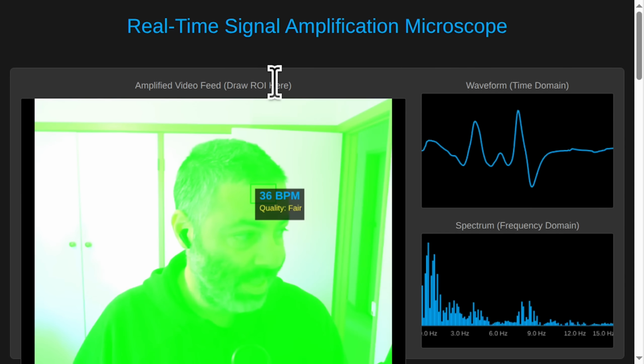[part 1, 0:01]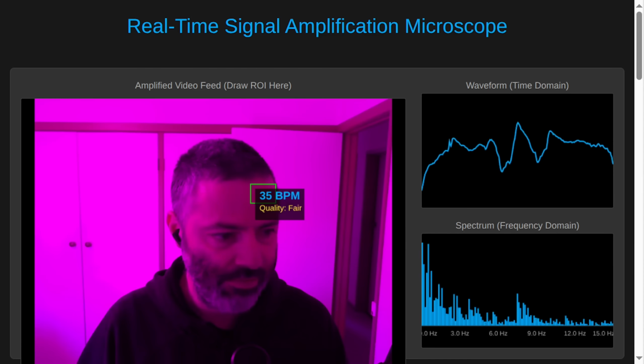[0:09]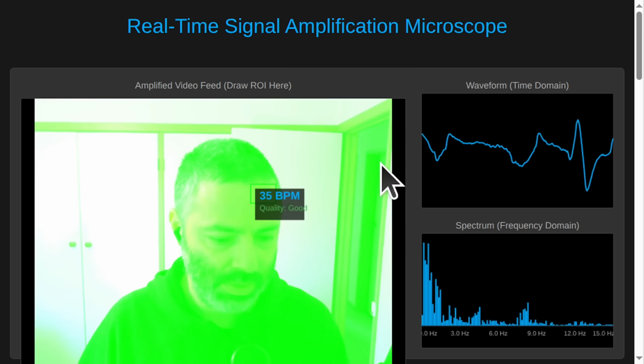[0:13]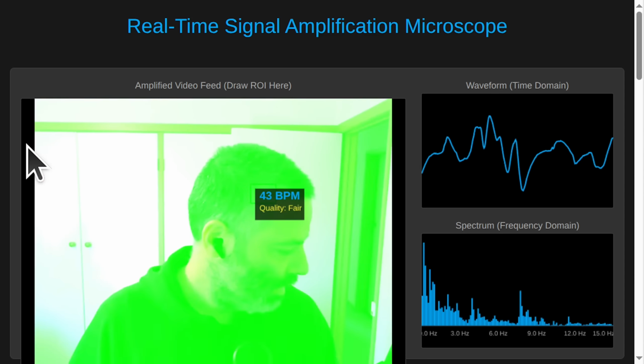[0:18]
So we're doing real-time signal amplification using a camera. Yeah, I think we made a rookie mistake. We made the very basic mistake where what's actually being measured is that flashing light on the screen. And we can test it easily by covering that.
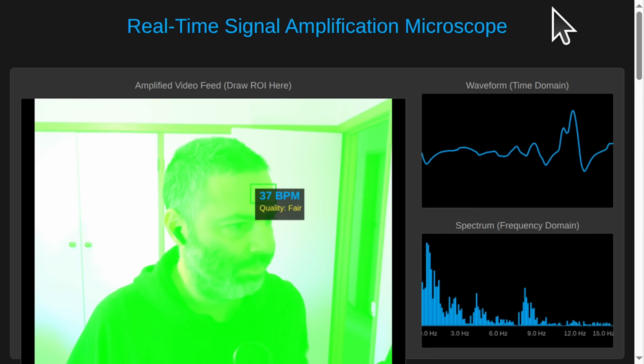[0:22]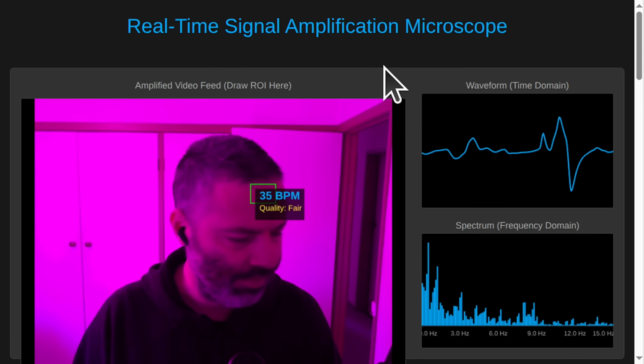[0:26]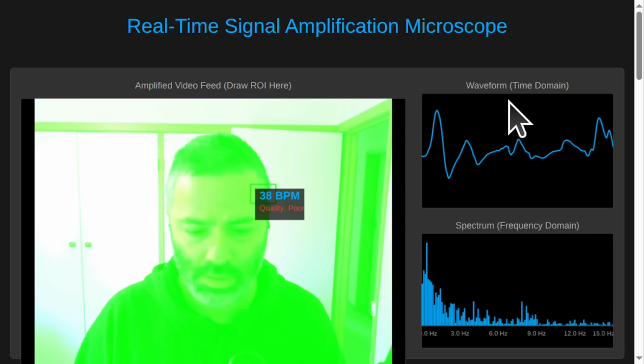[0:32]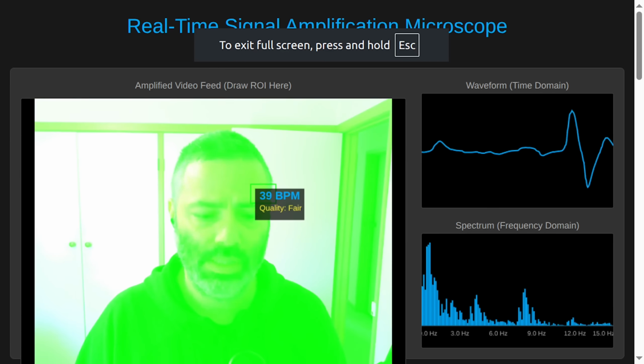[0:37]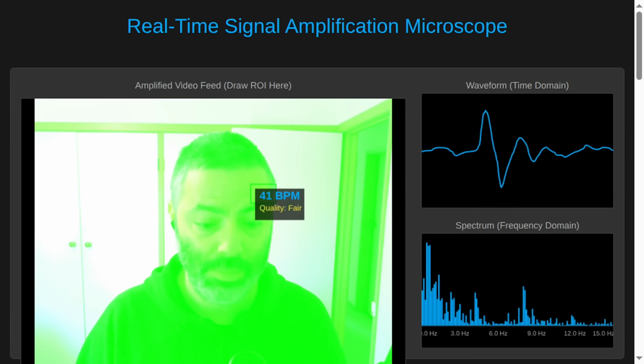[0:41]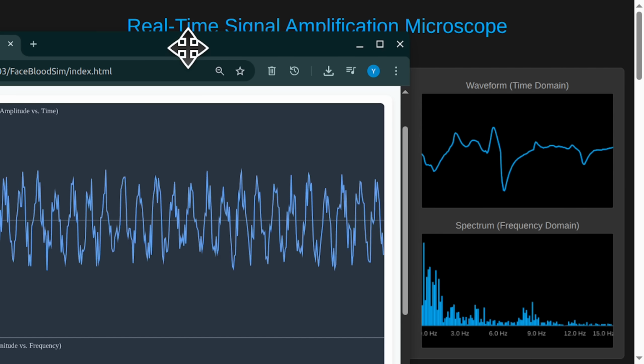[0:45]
I still want to see anything big enough to cover the thing, but essentially what's happening is that it's the light. I don't want to remove the screen, so essentially what's being measured is what's showing that 35 BPM is not real. So I will cover it by that and see the change.
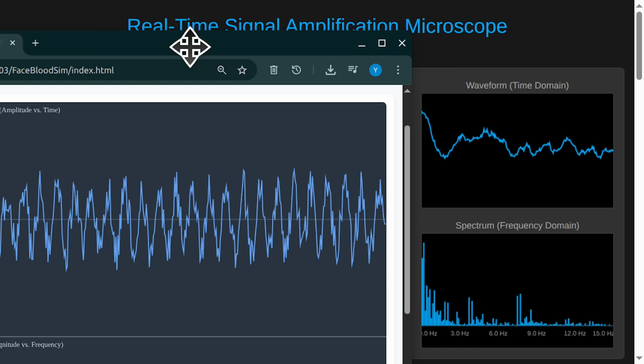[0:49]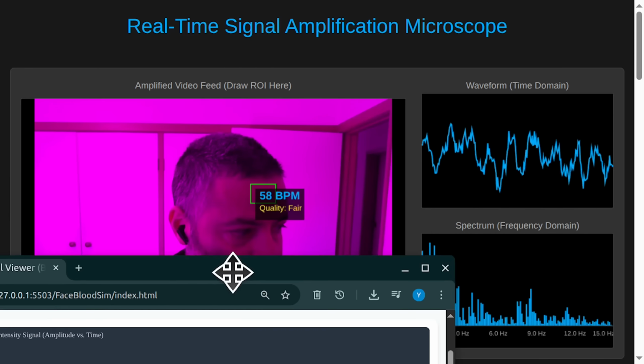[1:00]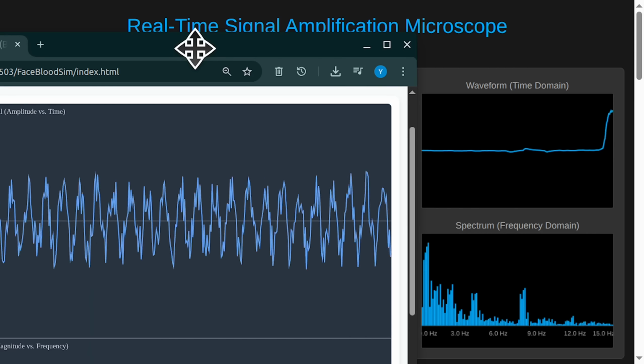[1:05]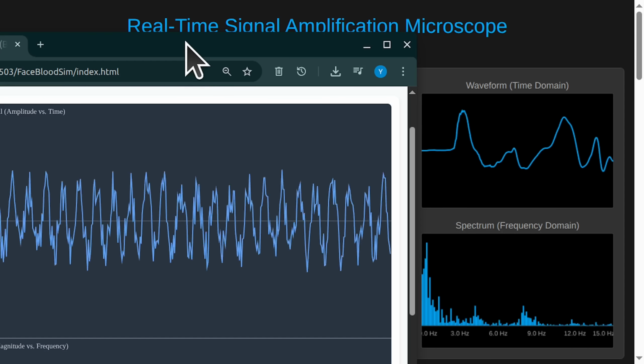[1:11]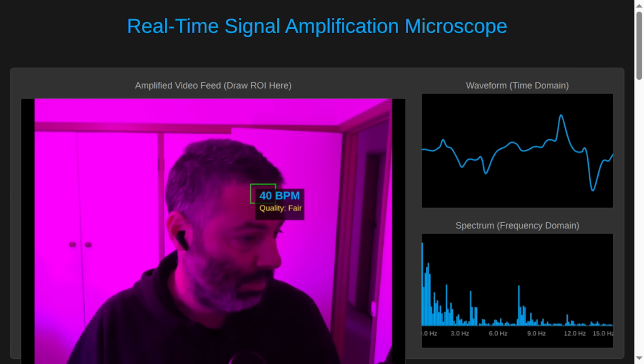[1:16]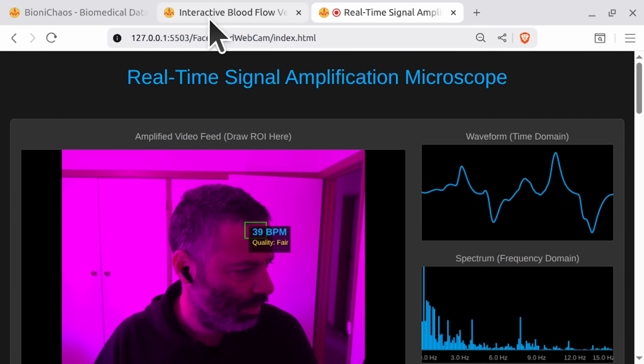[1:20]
So now it's not flashing light on my face. Okay, now it's doing the real ECG. Yeah, and the frequency has changed. Yeah, 62 is more like it. So it's the light reflecting off the screen. That's what happens when you monitor the system. Yeah, okay. We will need to change that.
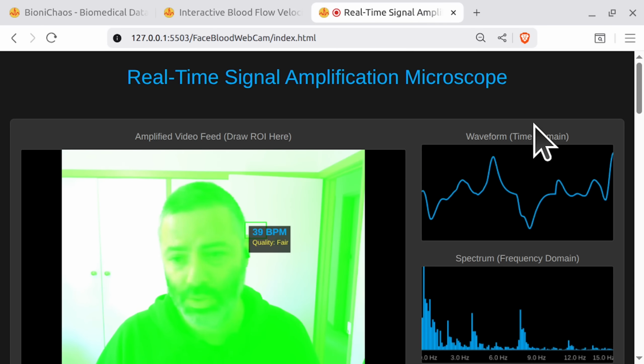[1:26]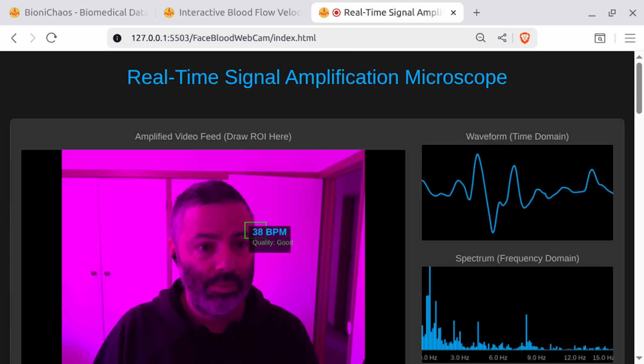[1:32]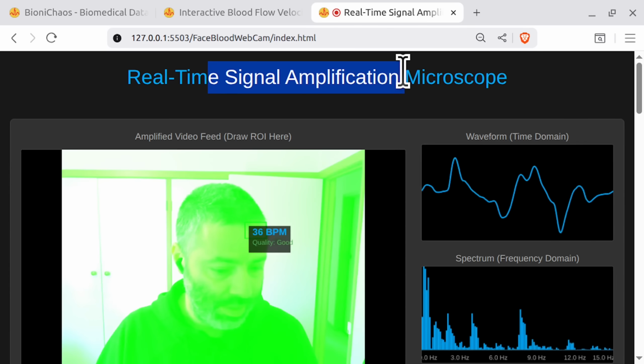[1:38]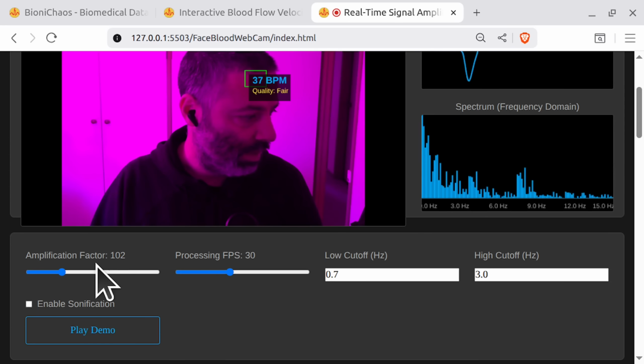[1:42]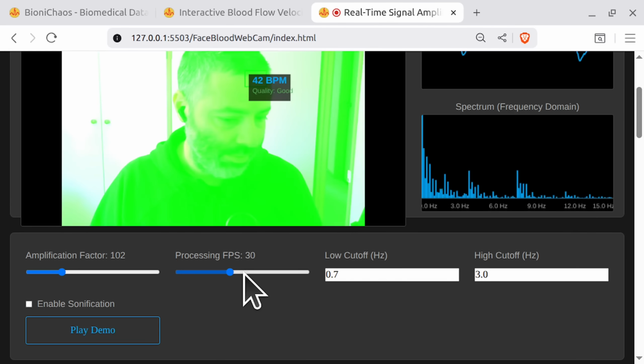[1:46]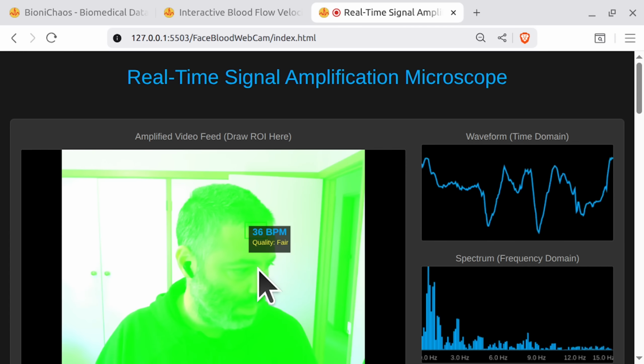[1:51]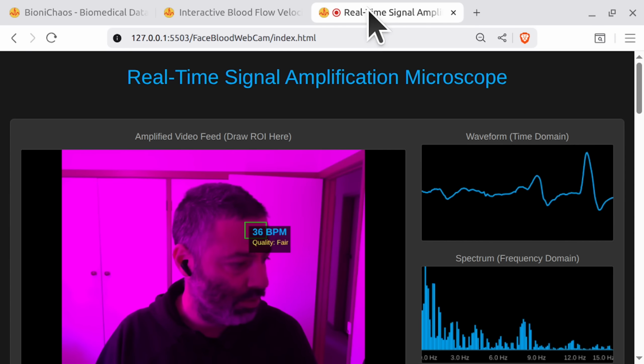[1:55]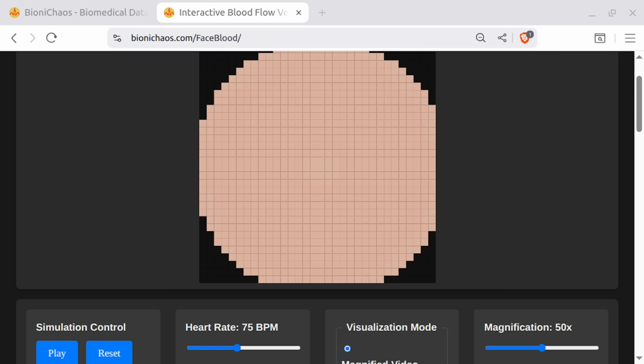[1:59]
Okay, so what we currently have, this one's published. I published the other stuff. So there will be essentially two versions with synthetic data. And then there will be one that can actually activate your camera and do real-time processing on your camera. Amplify the signal, process at whatever frames per second. You can set your filters and it will extract the beats per minute, which is your heart rate. But first we'll do it step by step, and we'll have an LLM explaining it properly as well.
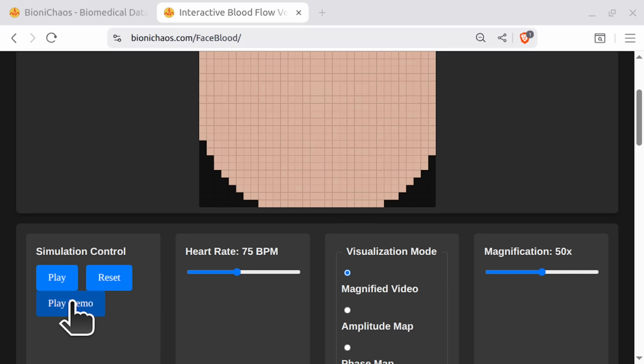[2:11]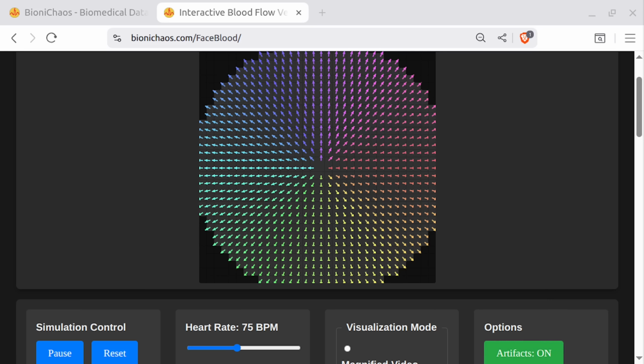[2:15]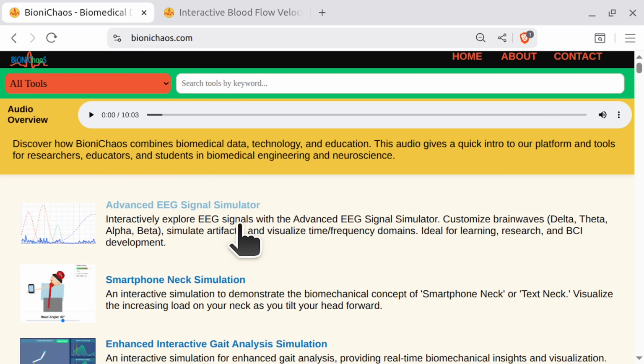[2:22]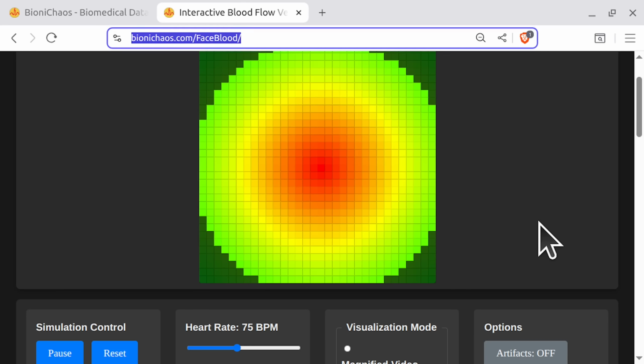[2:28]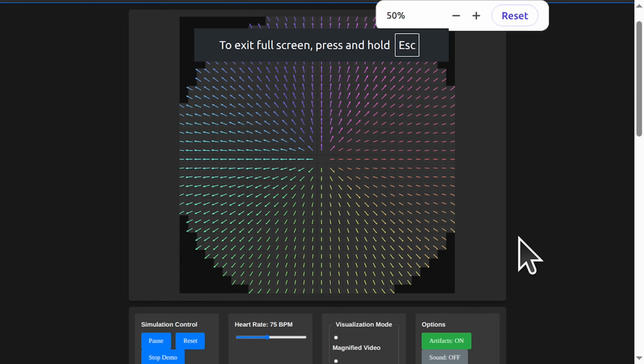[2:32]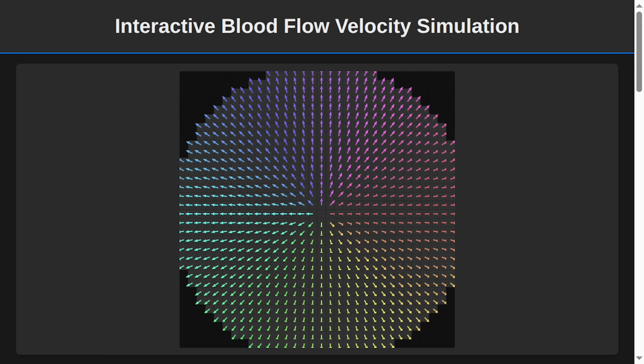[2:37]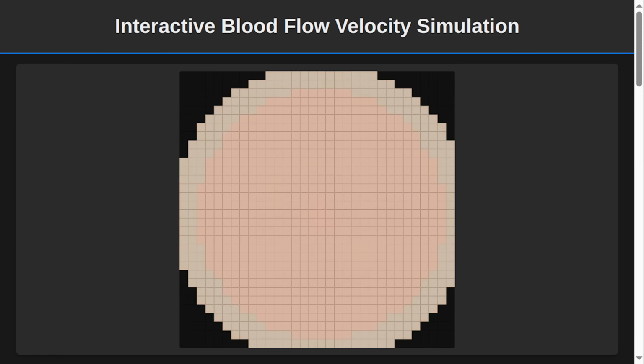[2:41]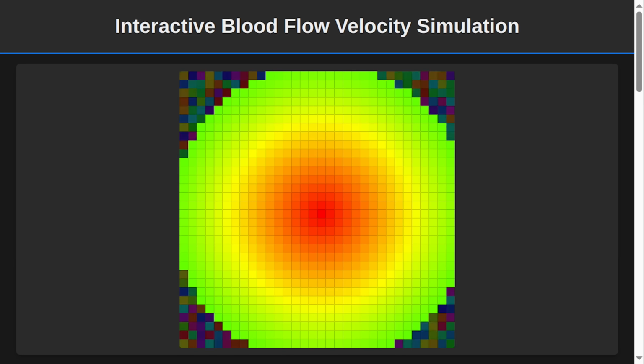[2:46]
So cover this one quickly. Okay, we essentially gave this page to Google AI Studio Gemini 2.5 Pro, and just listen to a 5 minute review. So what do you think?
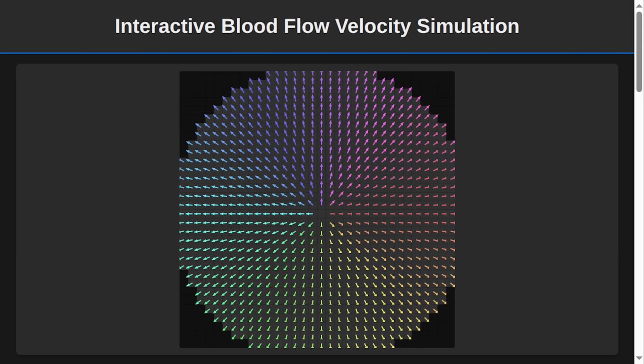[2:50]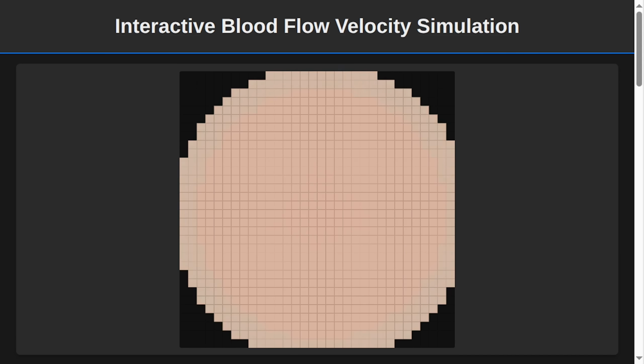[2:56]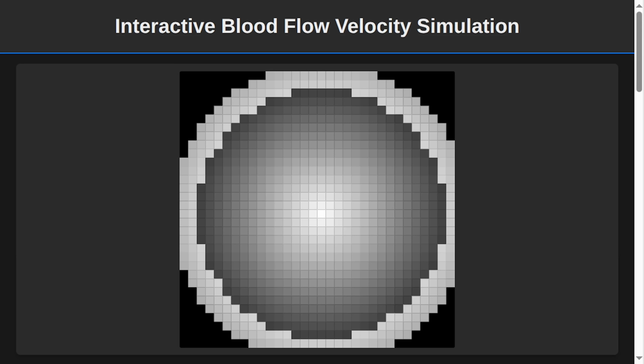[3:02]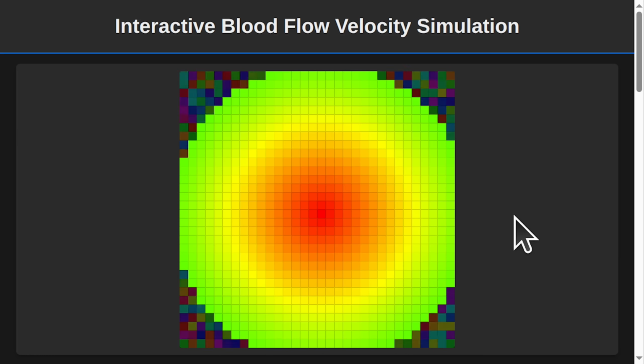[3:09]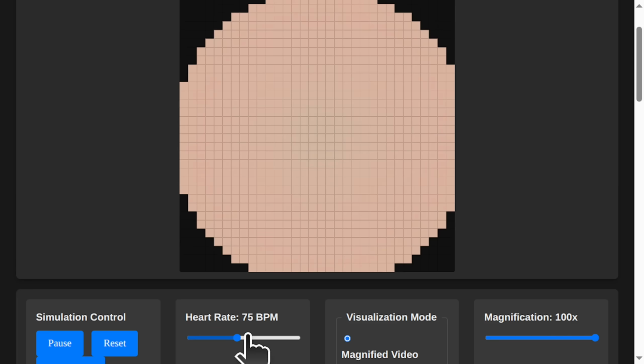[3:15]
Pretty cool, right? It's a beige square that blushes on command. I've seen more excitement on a piece of toast. What am I looking at? The world's most anxious screensaver? Not quite. You're looking at a simulation of your skin. That blushing is its heartbeat. We're amplifying the microscopic color changes that happen every time blood pulses through the capillaries just under the surface. You've built a digital vampire that can see blood.
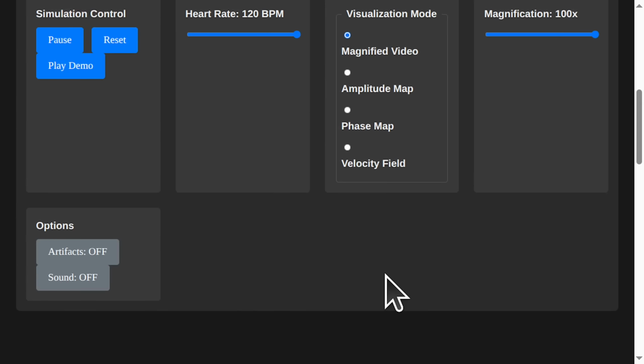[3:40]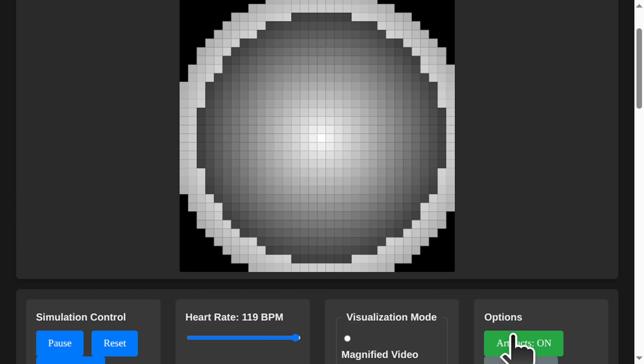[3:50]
Okay, I'm listening. So this magnified video mode is just turning up the volume on the skin's color. Exactly. It's based on a technique called Eulerian Video Magnification. We're not inventing the signal, just making the invisible visible. Now click on Amplitude map. Whoa, monochrome. It looks like a sonogram of a ghost. The bright parts are, what, the good parts? The bright parts are where the pulse signal is strongest. Think of it as a map showing where the major blood highways are. Darker areas have less flow near the surface. So it's a stud finder for veins.
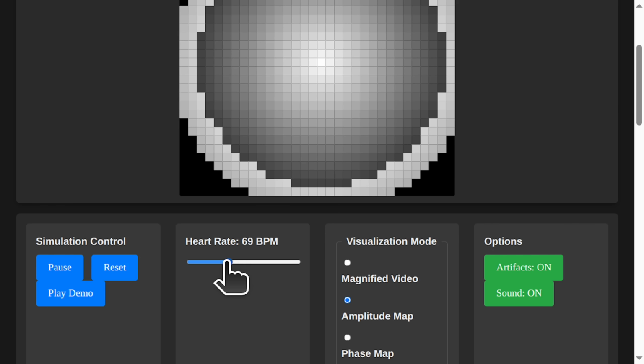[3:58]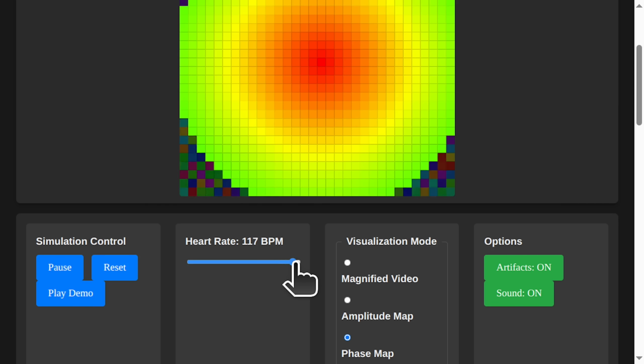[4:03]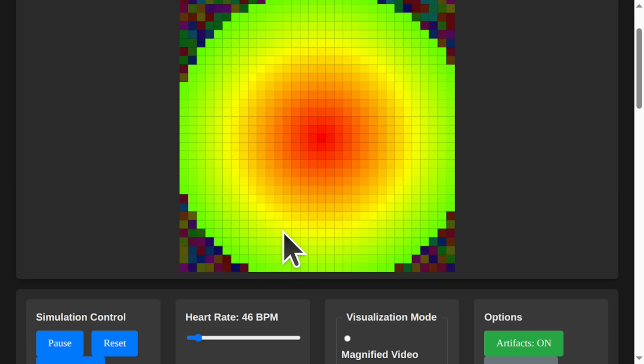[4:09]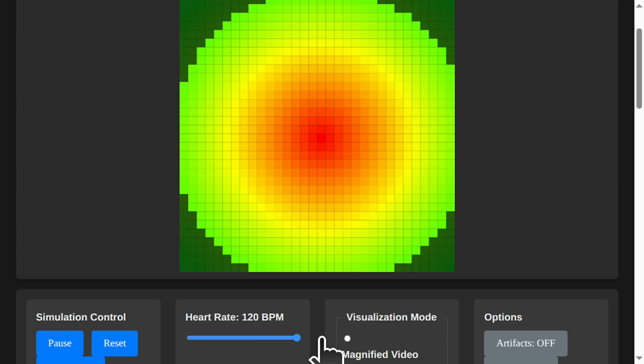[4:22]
Got it. What about this phase map? It looks like a psychedelic tie-dye experiment gone beautifully right. This is the clever bit. The phase map visualizes the timing of the pulse. See how the colors change from the center outwards? That's the pulse wave traveling across the patch of skin. Every color represents a different moment in the heartbeat cycle. Ah, I get it. It's like the wave at a baseball game. The people in the middle start and it ripples outwards. You're tracking the blood wave. So the blue guys are just starting to stand up and the red guys are already sitting down. That is a perfect analogy.
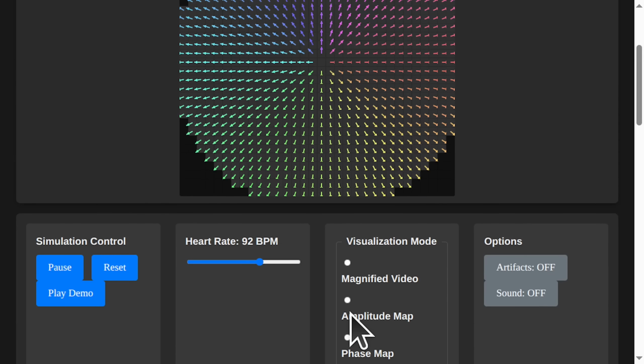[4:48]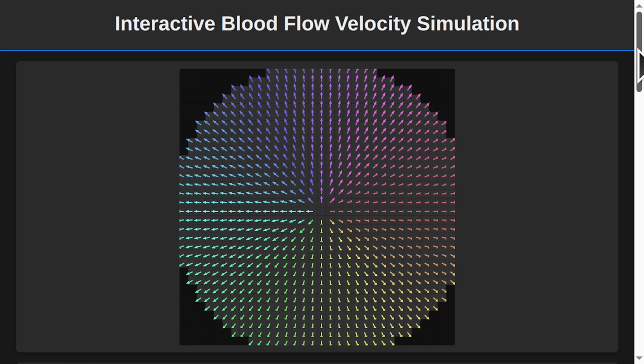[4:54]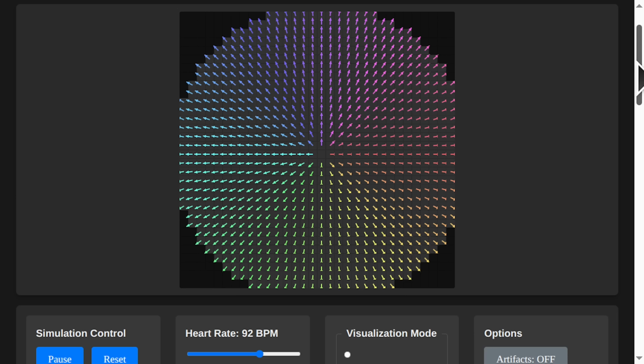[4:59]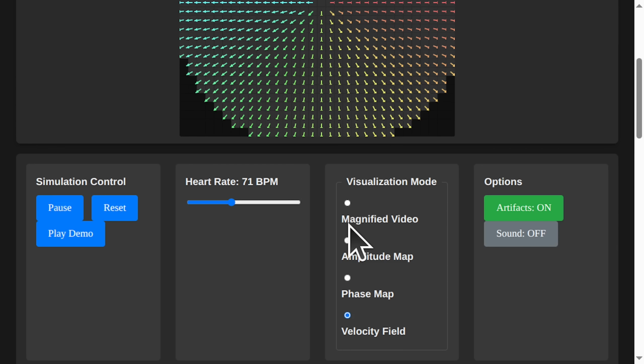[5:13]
And because we know the timing difference, the phase shift between all these adjacent points, we can calculate the final step. Click velocity field. Arrows. It's waves for my arteries. It's literally showing the direction the blood is going. Yup. By calculating the gradient of the phase map, basically looking at how fast the wave is moving between two points and in what direction, we can generate a 2D vector field of the blood flow. So you went from a beige square to a ghost map to a Grateful Dead t-shirt and landed on a traffic report for my circulatory system. That's a heck of a journey.
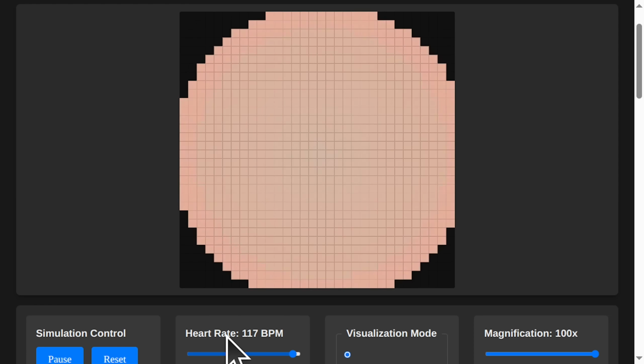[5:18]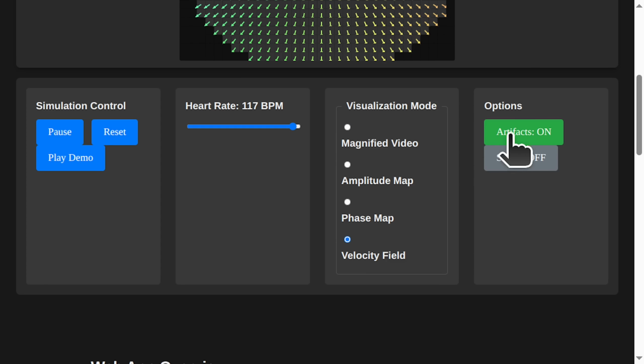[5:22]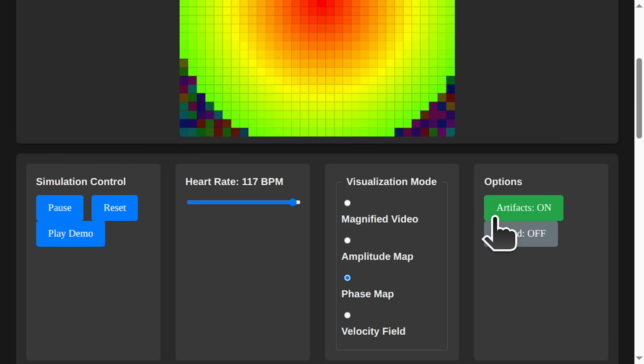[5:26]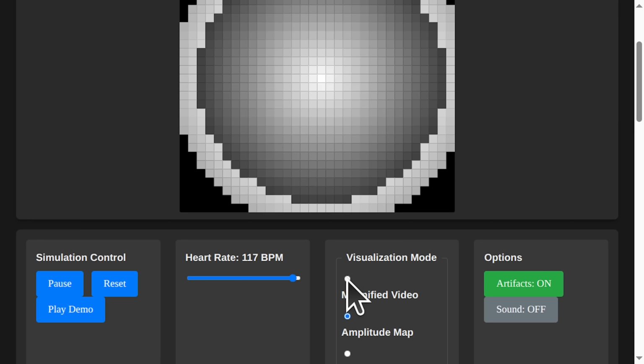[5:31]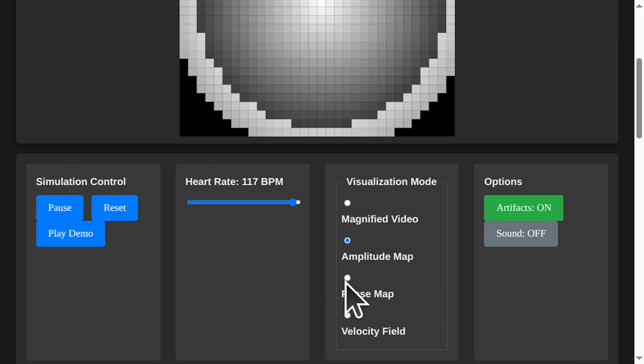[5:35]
What's this artifacts button do? Make it look like a blurry UFO video? Pretty much. Real-world video is noisy. You get motion, weird lighting, compression. This simulates that. See the halo effect on the amplitude map? And look how the phase map gets all noisy and chaotic.
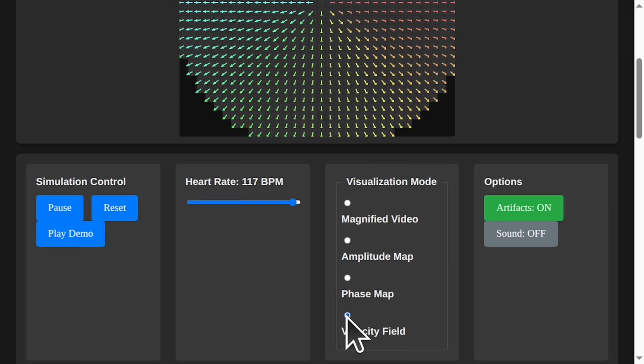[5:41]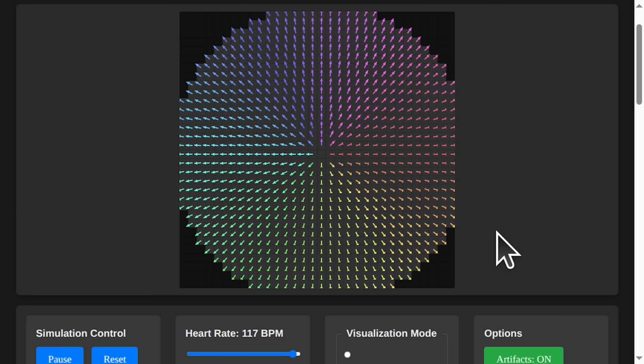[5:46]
It looks like my tie-dye shirt went through the blender. But wait, the velocity arrow is still mostly okay, a bit twitchy, but they know where they're going. Because the code is smart. The velocity calculation includes a step to filter out the noise.
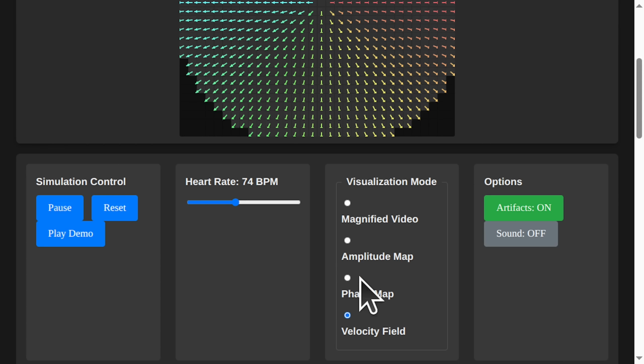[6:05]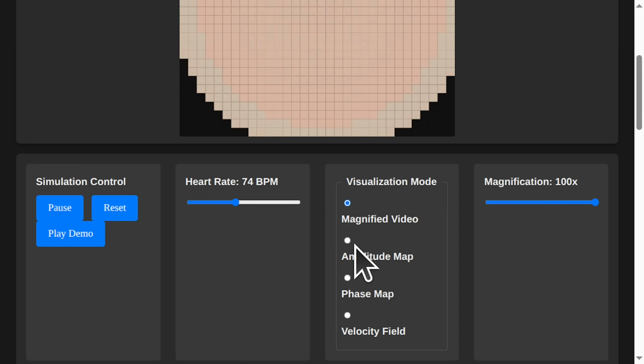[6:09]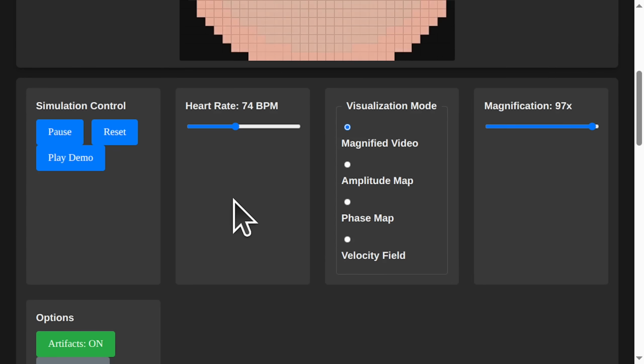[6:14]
It looks at the phase variance in a local neighborhood. If an area is too chaotic, like that staticky mess on the edges, it assumes it's an artifact and ignores it. A nosy neighbor algorithm. Hey, is everyone else on this block pulsing in a nice, orderly wave? Yes? Okay, then you, Mr. Disco Strobe Light Pixel, you're clearly drunk. We're ignoring you. That's a surprisingly accurate summary of local spatial filtering, yes.
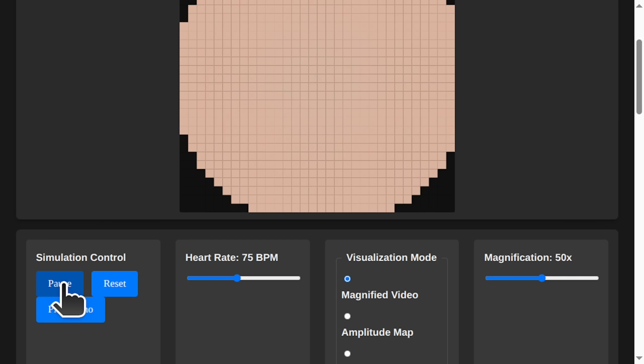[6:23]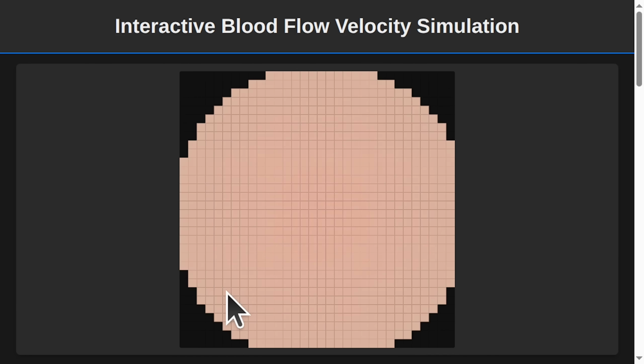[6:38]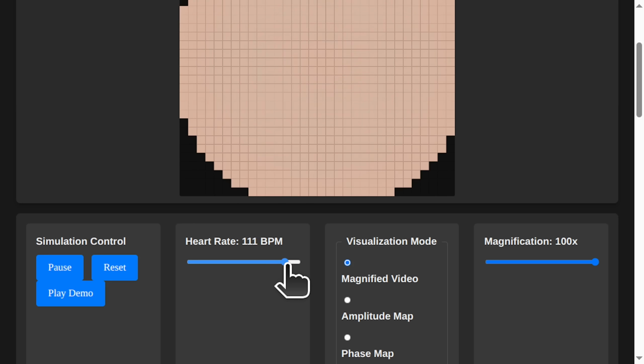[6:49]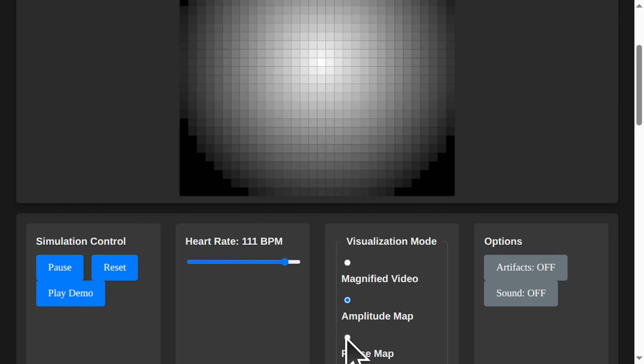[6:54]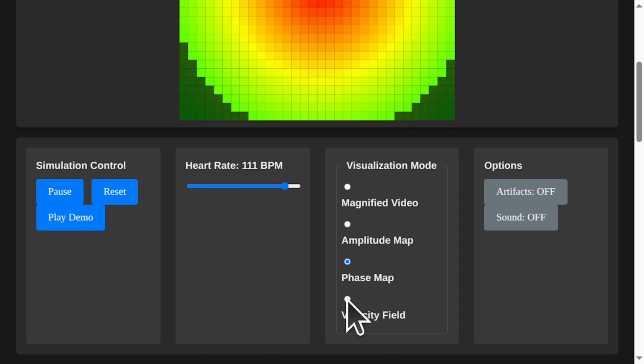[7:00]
It's all running in the browser with JavaScript. The generate synthetic data function creates this perfect little blood wave model, and request animation keeps the pulse smooth. So this isn't just a fun toy. What's the endgame? A lie detector app that checks if your date's heart is actually racing? The endgame is telehealth. Imagine a doctor being able to assess a patient's cardiovascular health just from a video call, or monitoring premature babies in an incubator without sticking wires to their delicate skin. It's about turning any camera into a powerful medical sensor.
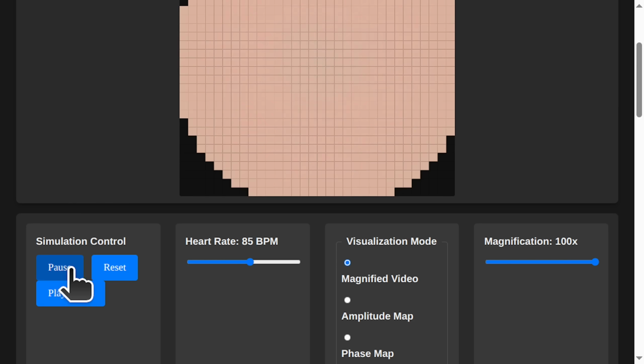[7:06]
Wow, okay, that's genuinely amazing. You're turning a selfie into a medical checkup. And here I was just thinking it'd be a great way to prove to my trainer that I am in fact dying on the treadmill. Well, it could do that too.
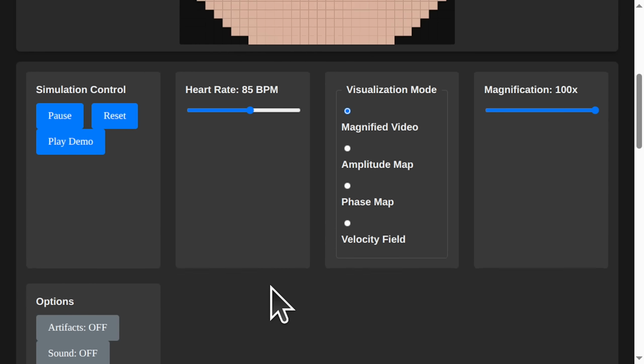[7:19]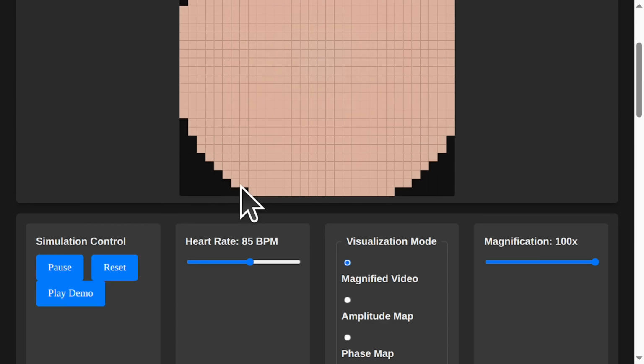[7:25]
Want to try turning on the sound? You made it make noise? Please tell me it's not a tiny synthesized screaming sound. It's a heartbeat. Okay, that's much better. So basically, you've built a beautiful, interactive, data-driven Tamagotchi of a human artery. I love it. Don't tell it I called it beige. I think I hurt its feelings.
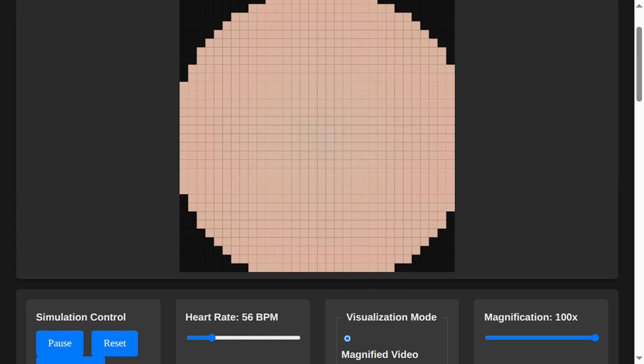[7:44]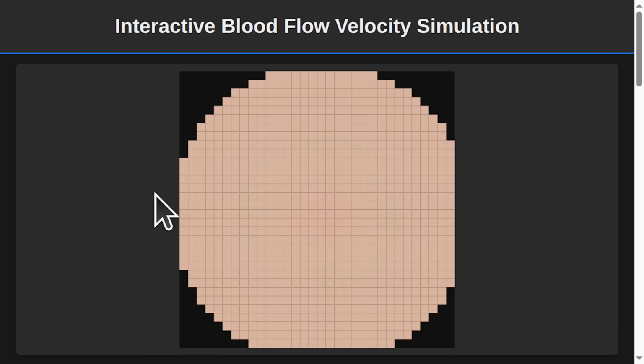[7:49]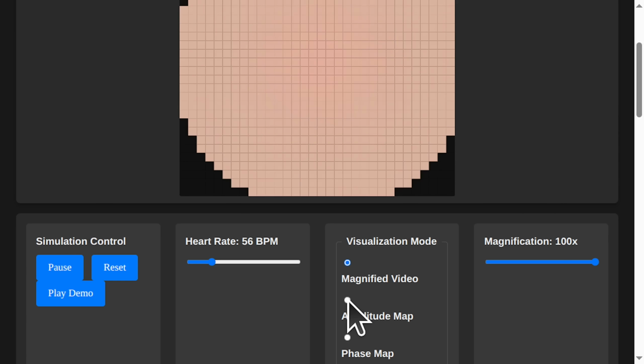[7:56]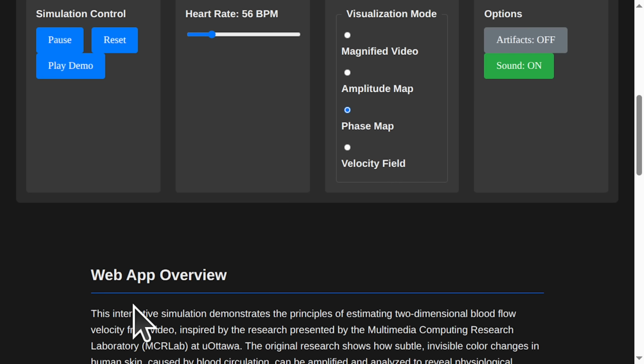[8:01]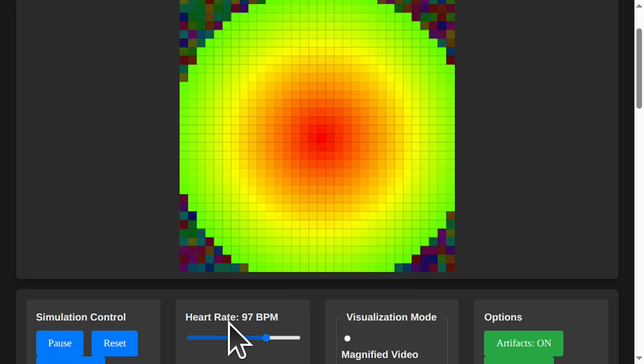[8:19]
Okay, so we have this demo of this synthetic data simulation. We have another simulator, but first, we're trying to improve a few things. Obviously, the amplitude map and the phase map. The noise was working, but the heart rate actually not changing anything. This code was generated by Gemini, and let's see if it actually picked up on that. I don't think so.
So we'll do an overview of 4 minutes. Notebook LM. It's meant to be about the code itself, and then we will move on to the second simulation.
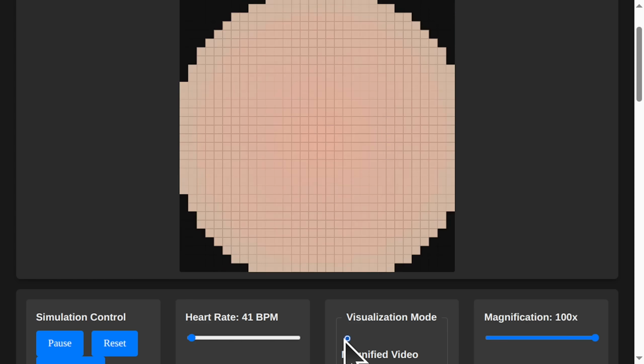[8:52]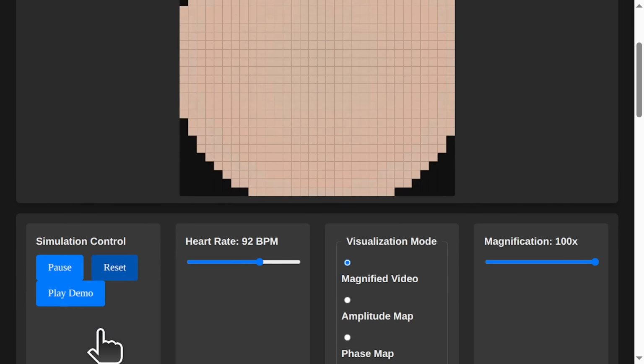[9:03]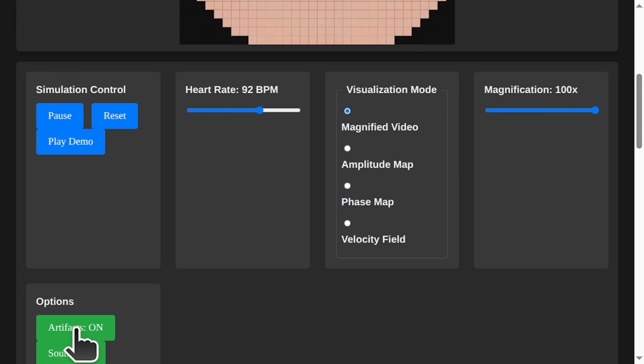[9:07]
Okay, so you've seen the code, you've seen the chat about it. What's your first unfiltered thought? My first thought is that you've created a mood ring for a patch of skin that doesn't exist. I suppose that's technically accurate. It's a synthetic skin patch, and we are analyzing its mood, if its mood is its blood pressure. See, you get it. You data scientists call it visualizing hemodynamic signals. I call it making a ghost blush.
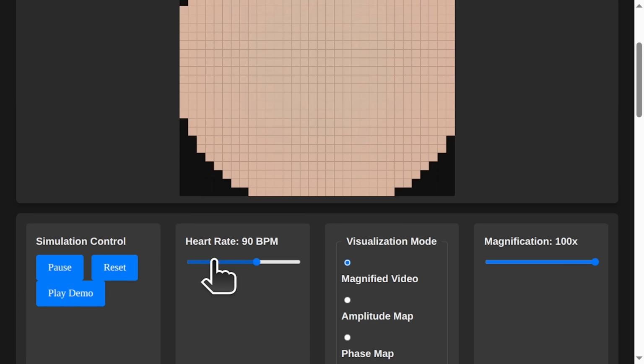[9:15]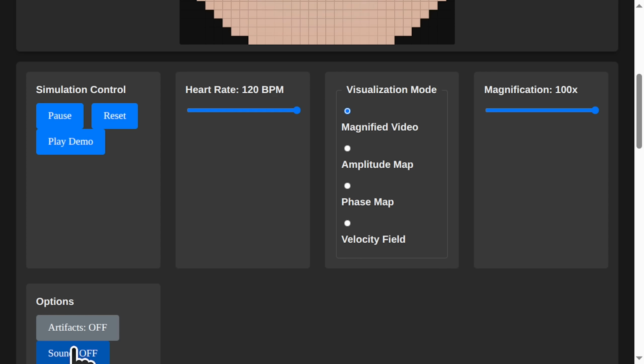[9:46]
You're basically turning the volume up on a whisper until you can hear what brand of coffee it had this morning. That's the essence of Eulerian Video Magnification. You find a signal that's too small to see, the tiny reddening of skin with each heartbeat, and you amplify it until it's obvious. The magnified video mode is exactly that, turning up the volume on the skin's shy ghost. Right, and the amplitude map, that's just a map of where the ghost is shouting versus where it's muttering? Precisely. It shows the strength of the pulse. Brighter areas mean more blood, a stronger signal. It's how you'd find the major arteries. So, a treasure map for Dracula.
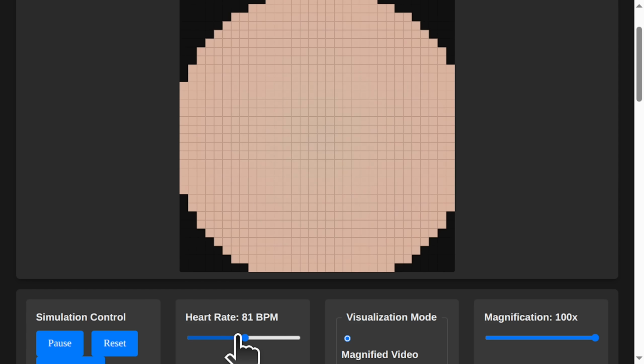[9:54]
Got it. But the phase map, Misha, that thing looks like a psychedelic poster from the 70s. What am I looking at? That's the coolest part. The phase map isn't about how strong the pulse is, but when it arrives. The color represents the timing. As the pulse wave travels outwards from the center, the color changes, showing the delay. It's like watching ripples in a pond, but the ripples are your heartbeat. Okay, so if my skin were a rock band, the phase map is the light show that's perfectly synced to the drum solo of my heart.
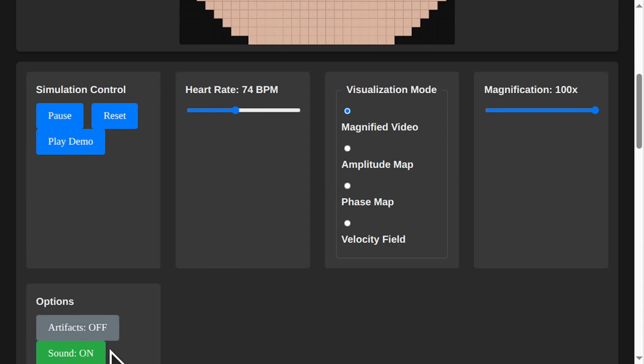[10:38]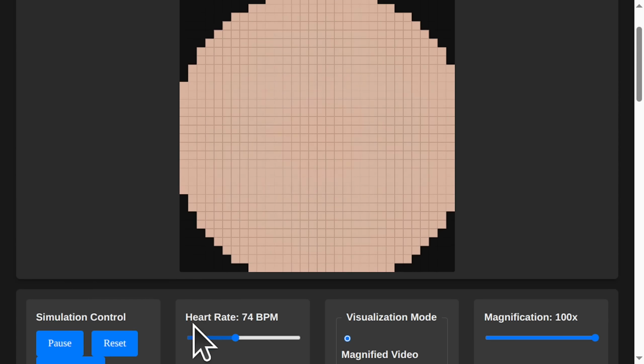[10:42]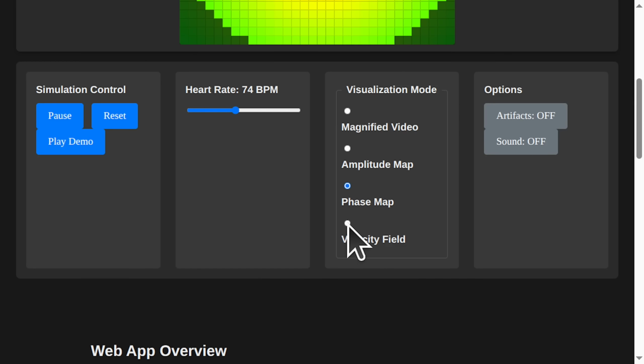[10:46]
I can respect that. Which brings us to the velocity field, the little arrows. The grand finale. By looking at how the phase, the timing, changes between two adjacent points, we can calculate the direction and speed of the wave. That's the gradient. We're literally calculating the flow of the ripples. So it's a bunch of tiny caffeinated ants all pointing in the direction the blood is going.
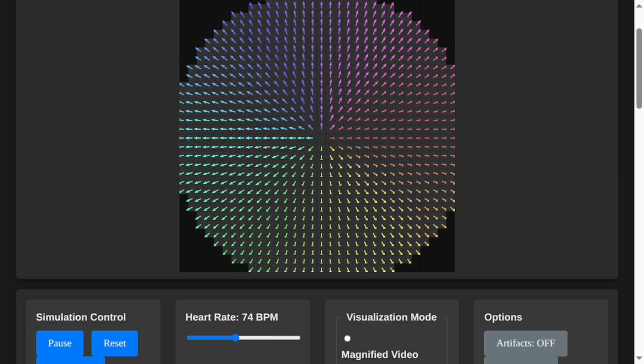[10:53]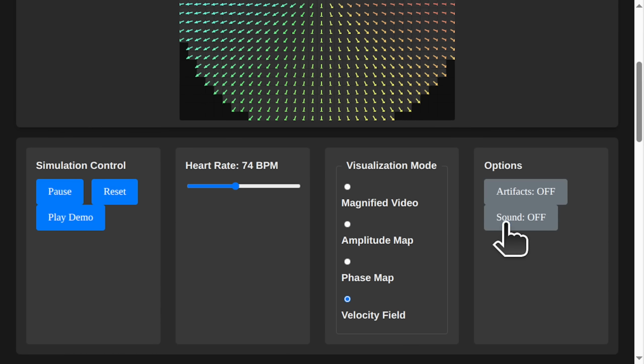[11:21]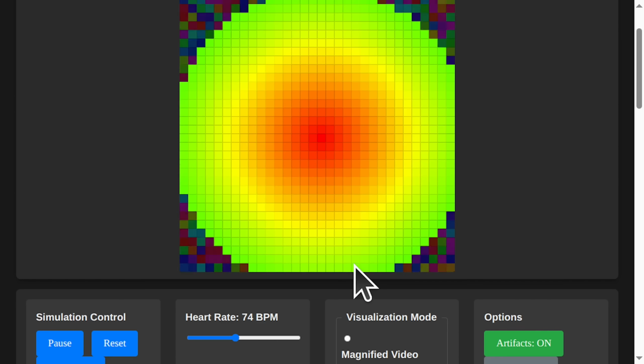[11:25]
And my big question, the artifacts button. Why would you build something beautiful and then add an uglify button? Because the real world is ugly. It's noisy. People move, the lighting changes. The artifacts button is our honesty button. It simulates the noise and halo effects that real analysis has to deal with. It shows that our velocity calculation is smart enough to ignore a lot of that garbage. So it's not an uglify button, it's a keep it real button. The code is admitting its own struggles. I like that. It's vulnerable.
And the play demo button. That's just a guided tour. It cycles through the modes and settings automatically. No. That's the app giving its own TED Talk. First, let me show you my raw, magnified self. Now for your consideration, my amplitude. But wait until you see my phase. It's very confident, your little app. It has reason to be.
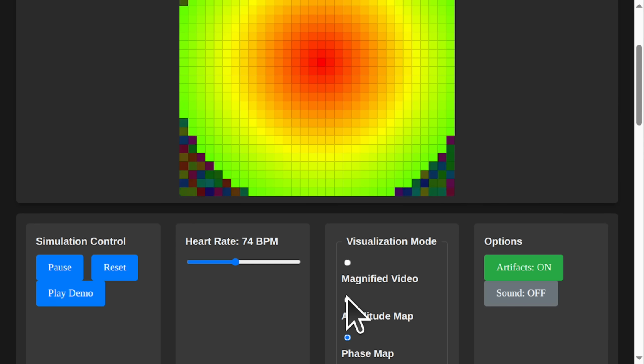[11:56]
And think about the improvements we discussed. Getting it to work on a real face with a webcam. Whoa, slow down. You want to point my laptop camera at me and have it tell me my blood is flowing chaotically with a chance of anxiety. My boss will start using it in meetings. Yozik, your velocity field looks a little sluggish today. Need another coffee? It's a privacy nightmare and a comedy goldmine.
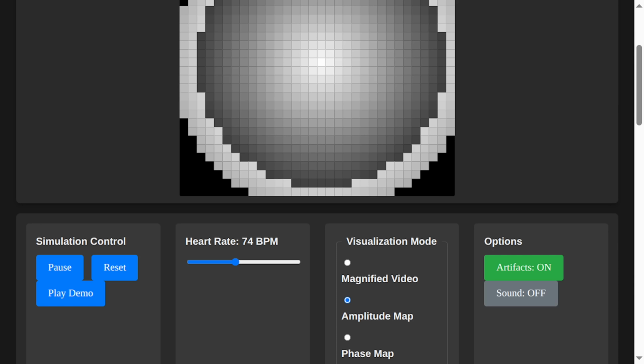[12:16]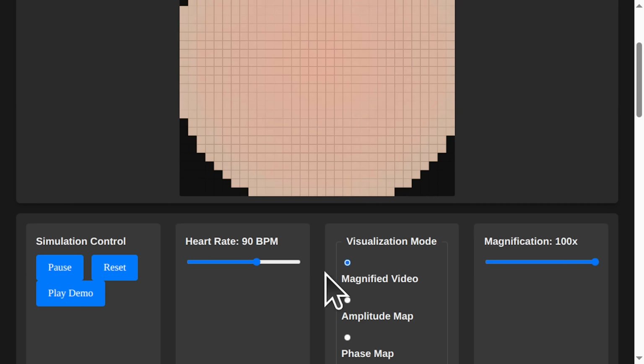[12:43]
But the potential for non-invasive medical diagnostics, checking a baby's heart rate without touching them, assessing burn victims. I know. You're trying to save the world with math. I'm just here to point out that you've also invented the world's most over-engineered lie detector. It's all just data. We're just trying to translate what the body is already telling us. And that's what's hilarious. We spend all this time trying to understand ourselves, our emotions, our purpose, and it turns out we're all just a bunch of beautifully complex, pulsing blobs, walking, talking phase maps. And you, my friend, are the cartographer.
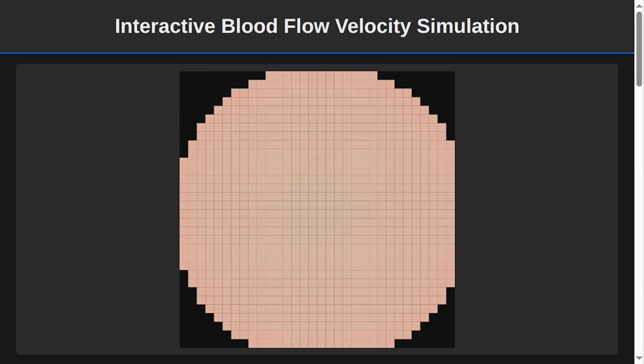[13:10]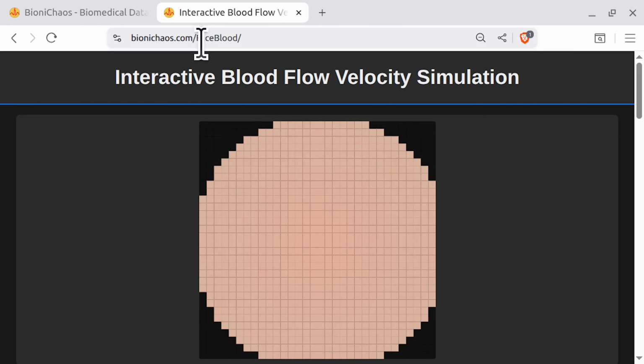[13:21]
Okay, so there's that. I don't think we will be improving it much further. Obviously, some of the things don't work. The magnified video simulation works okay, so you kind of get the picture of what it was meant to be doing. Okay, now we have another simulation. This one is deployed. Our simulation isn't yet. We will deploy that, and we are generating a chat about it. We'll just give the code to Gemini.
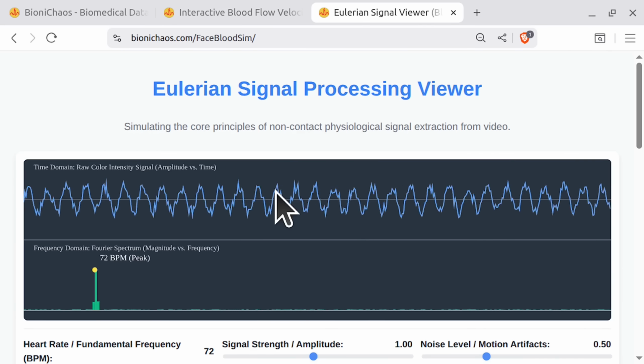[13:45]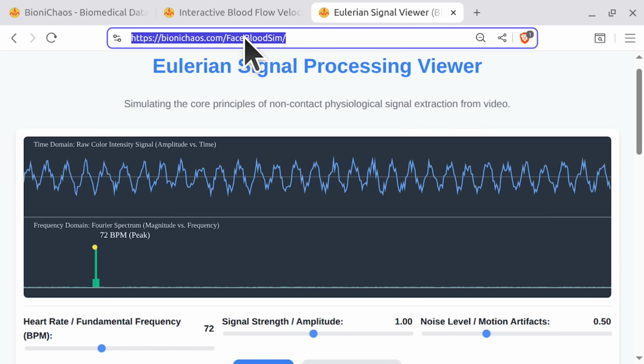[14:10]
Okay, so we have the face blood simulation. This is now deployed. This is essentially telling you the principle of calculating the actual beats per minute from the pulsation of a specific color or all the colors, all the RGBs, and extracting the frequency, assuming of course that the main pulsation is the face on the video footage. It only works in that case. Yeah, so this one is deployed as well. You can go check it out as well. We'll explain it.
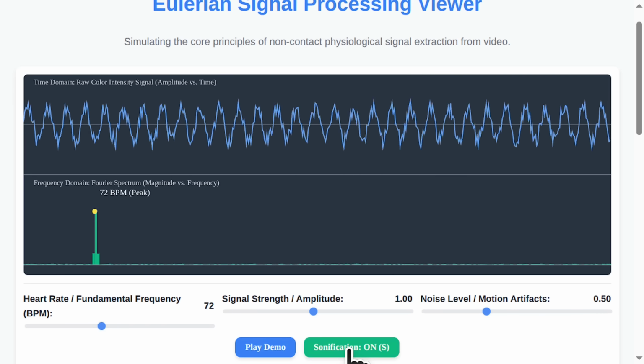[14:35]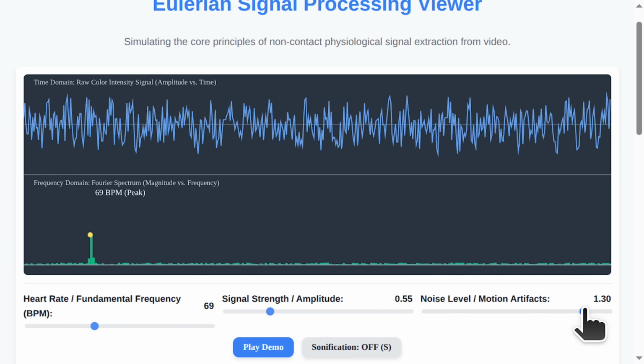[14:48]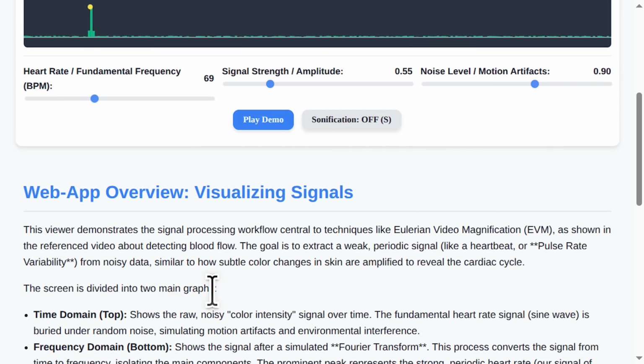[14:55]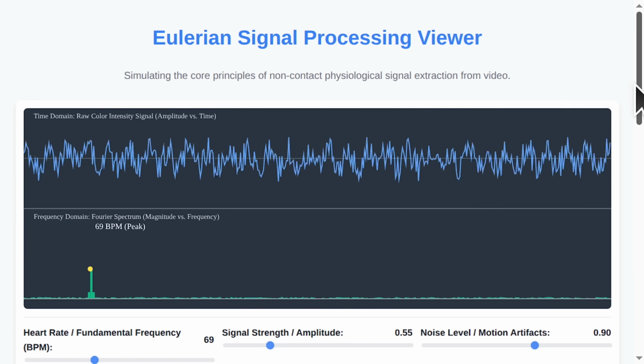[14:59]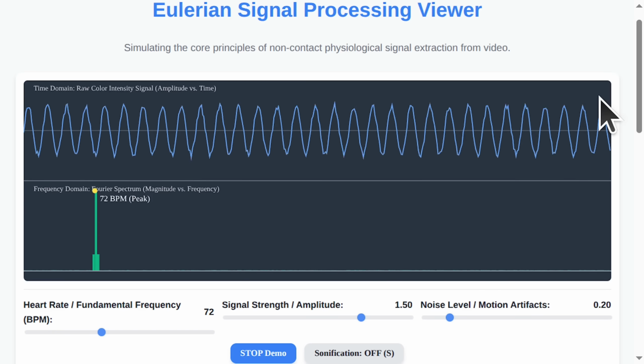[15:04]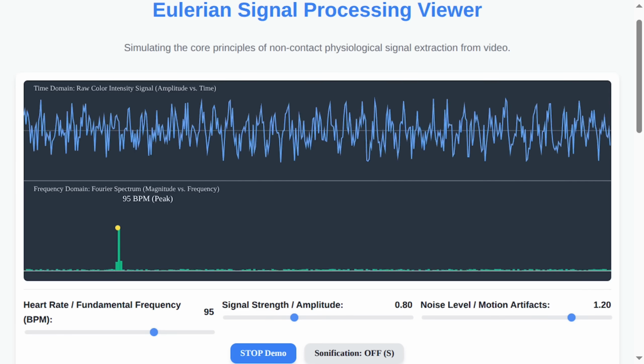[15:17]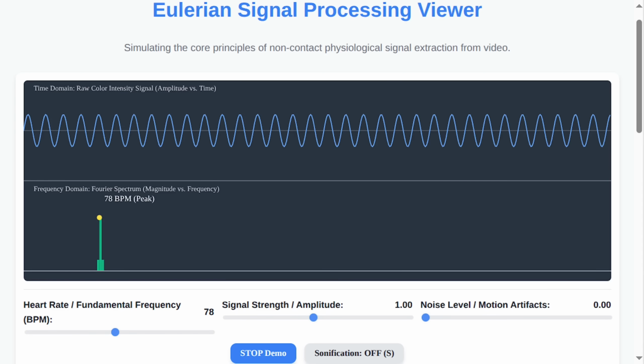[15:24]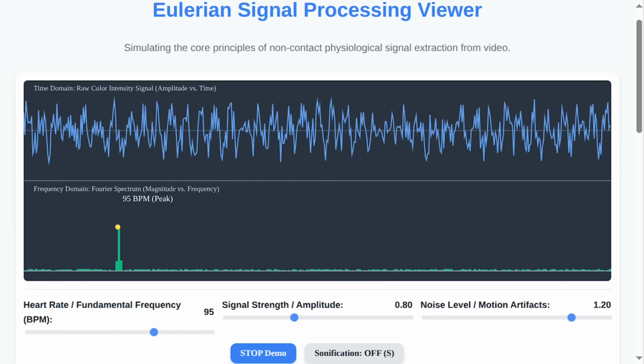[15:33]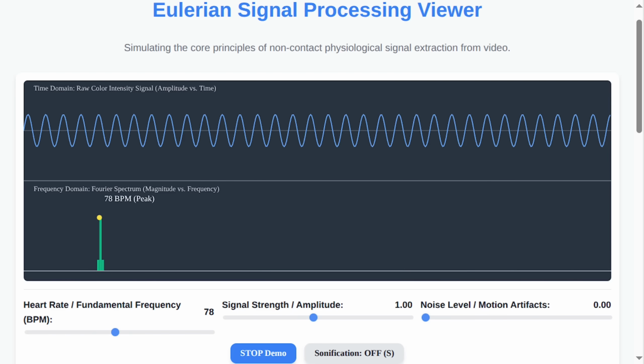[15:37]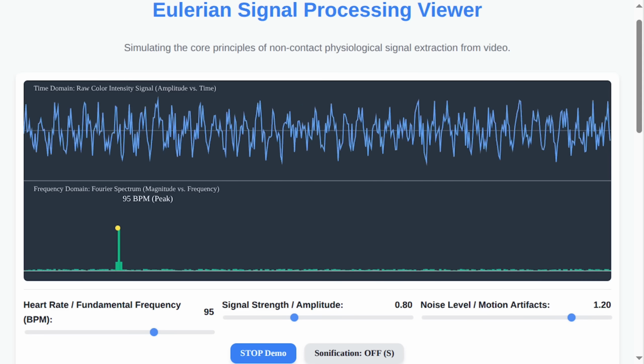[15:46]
Yeah, so you can change your heart rate, signal amplitude, noise. There's an explanation at the bottom of the page, as per usual. The demo will just scroll all the controllers on the page to show what they are doing, which is good for testing. It's just jumping between them and changing multiple controllers at a time, which is not ideal. Better than no demo at all. And we'll have an overview by Notebook LM of the code, and then we move on to the actual thing that actually uses your camera.
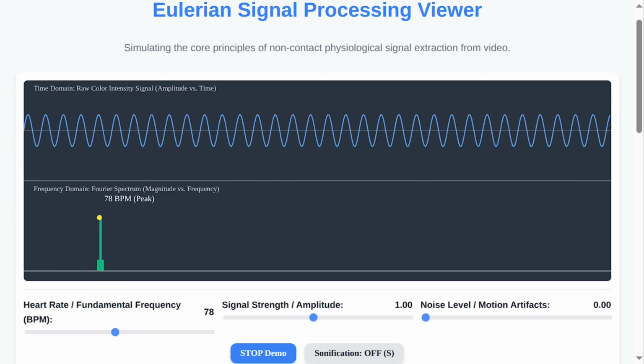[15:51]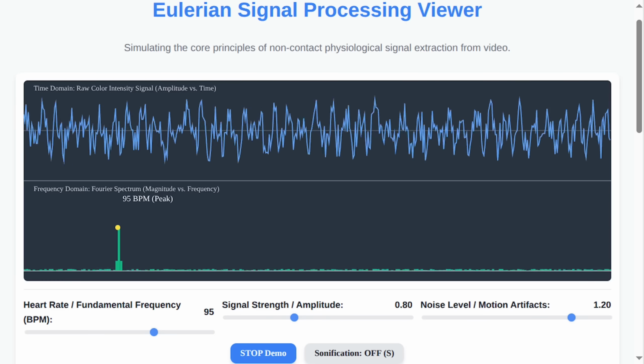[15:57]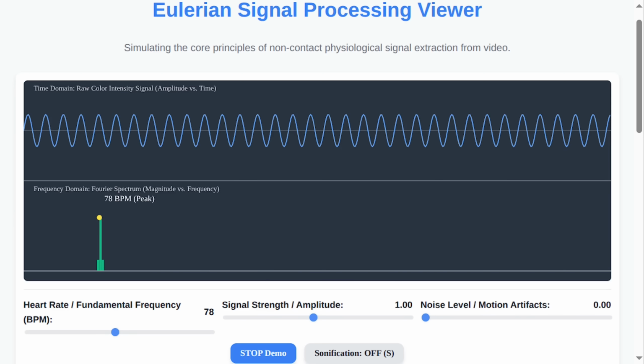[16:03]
So, what do you think? It's my little weekend project. I think the top graph is what my anxiety's stock portfolio looks like, and the bottom one is my interest in actually checking my portfolio. One spiky, chaotic mess and one lonely, optimistic little line.
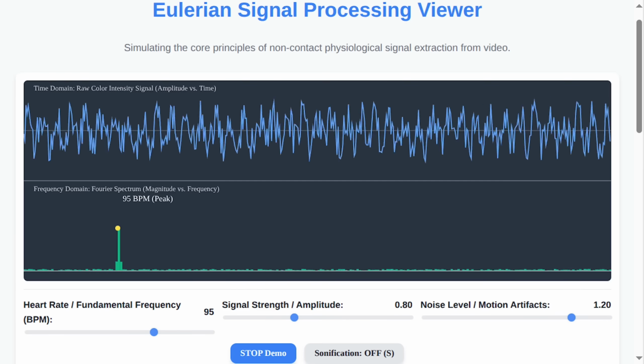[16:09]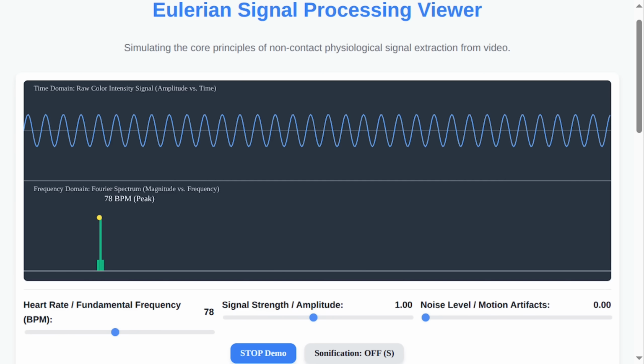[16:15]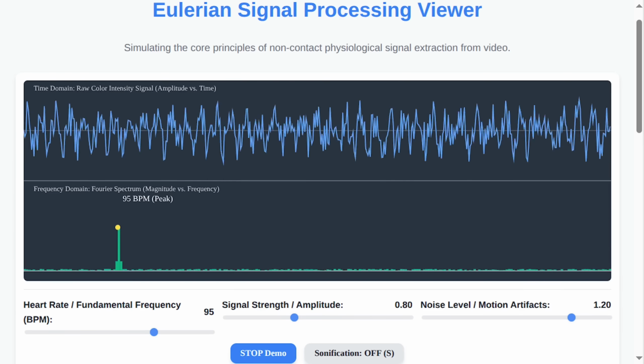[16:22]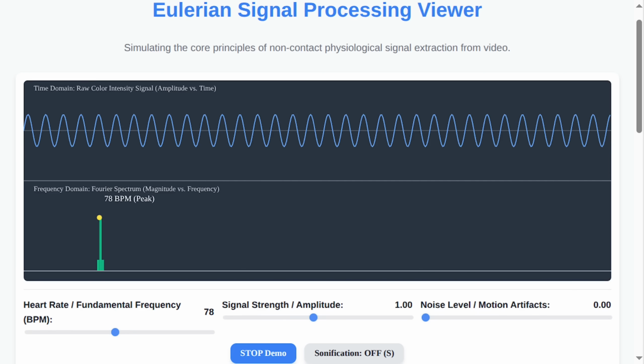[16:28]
That's surprisingly accurate. The top graph is chaos. It's a simulated signal, like the tiny color changes on a person's skin as blood flows through it, but buried under a mountain of noise. Camera shake, lighting flicker, you name it. You're telling me you can see my blood moving from a video? Are you a wizard or a very sophisticated vampire? Neither. Just a data scientist.
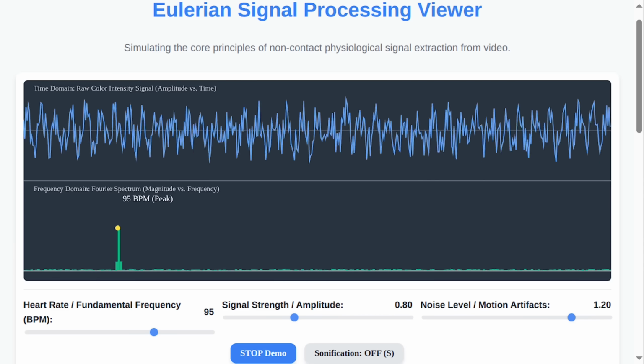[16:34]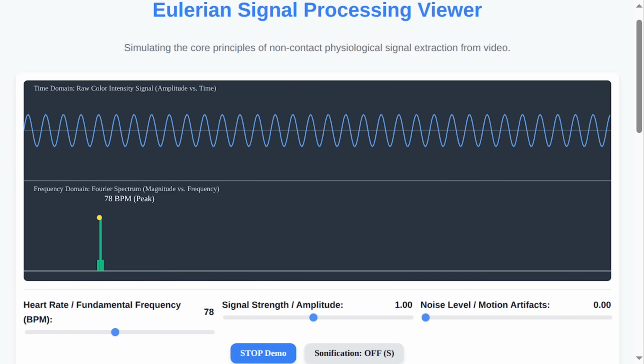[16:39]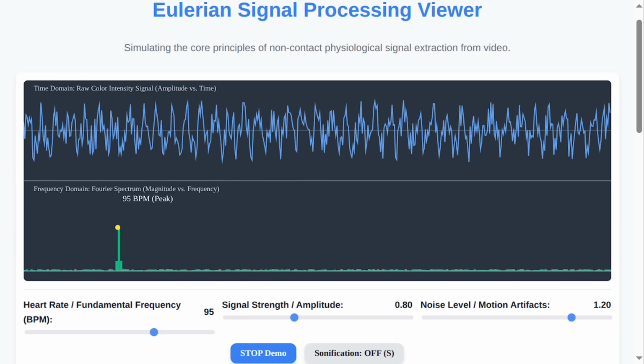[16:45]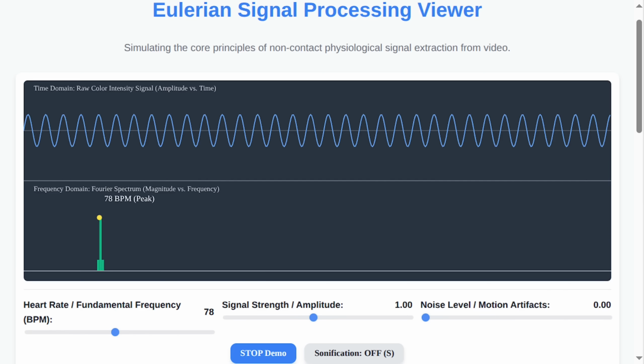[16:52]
We're trying to find the pulse, the steady repeating heartbeat inside that chaotic mess. The top graph is the time domain. It's what the signal looks like moment to moment. It's useless, right? You can't see a heartbeat in that jagged mess. It looks like a seismograph during a toddler's birthday party.
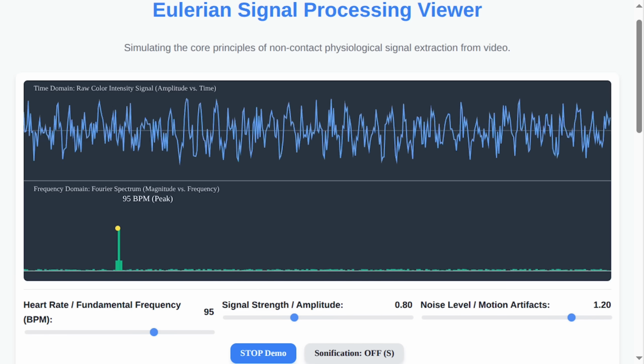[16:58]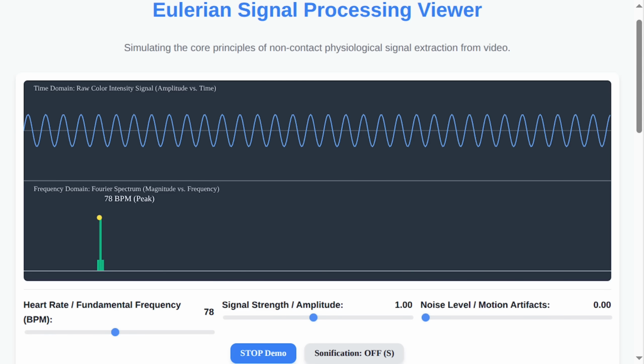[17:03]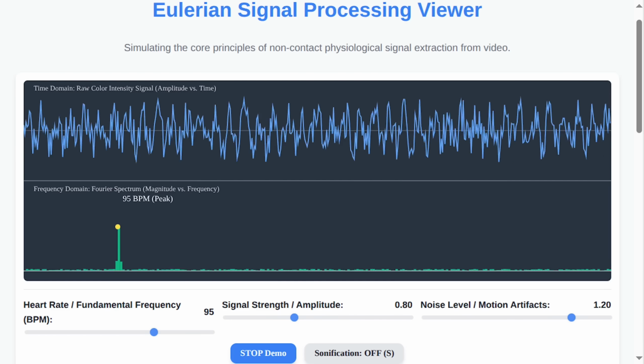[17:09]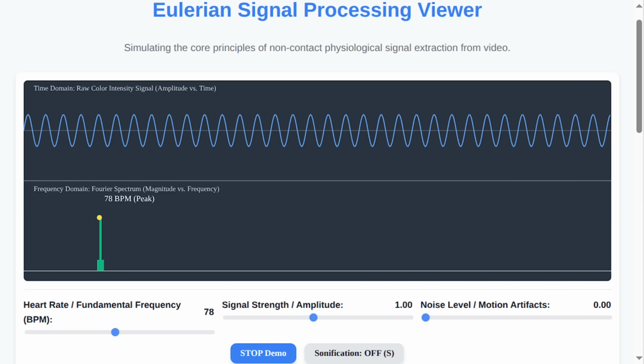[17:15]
So what's the lonely mountain on the bottom? Is that like the one sensible thought I have all day? Exactly. That's the frequency domain. We use a mathematical tool called a Fourier transform, which is a fancy way of saying we take all that noise from the top graph and sort it by its rhythm. You sort chaos by rhythm? My friend, you haven't seen me dance.
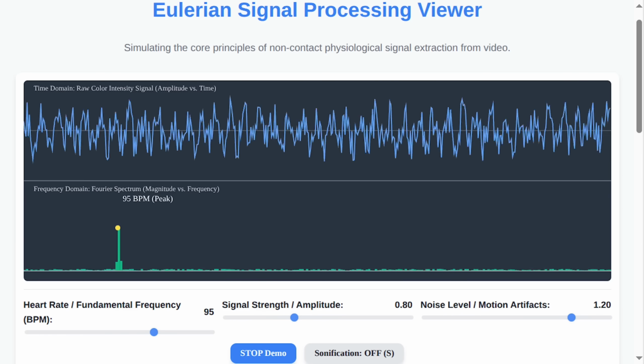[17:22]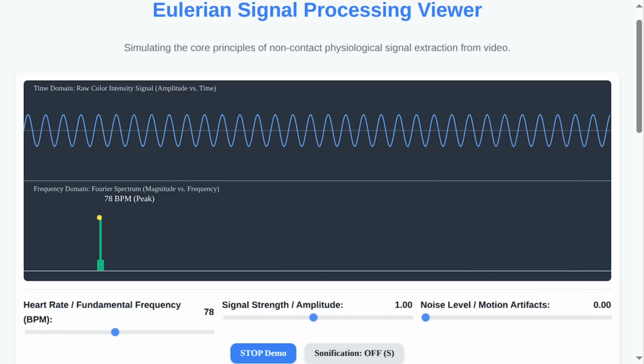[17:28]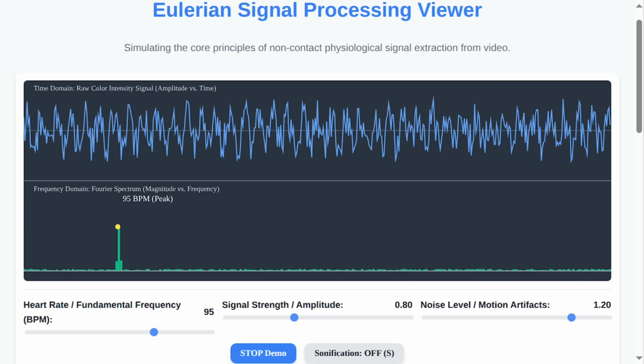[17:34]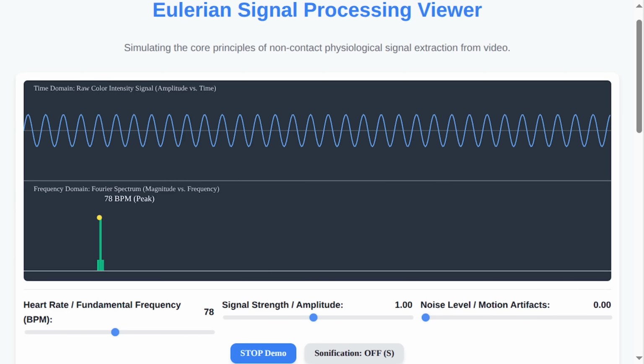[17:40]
Think of it like this. The top graph is a crowded bar. You hear 100 conversations, the clinking of glasses, the awful background music. You can't pick out any single thing. The Fourier transform is like a magical sound engineer who hands you a mixer. Each slider on the mixer is a different pitch. You slide up the one for a low, steady hum, and suddenly, clear as day, you hear the refrigerator buzzing.
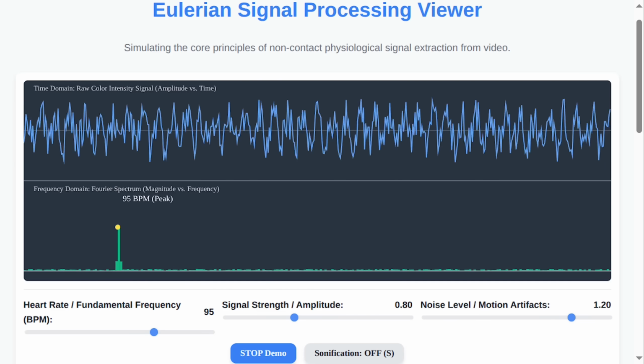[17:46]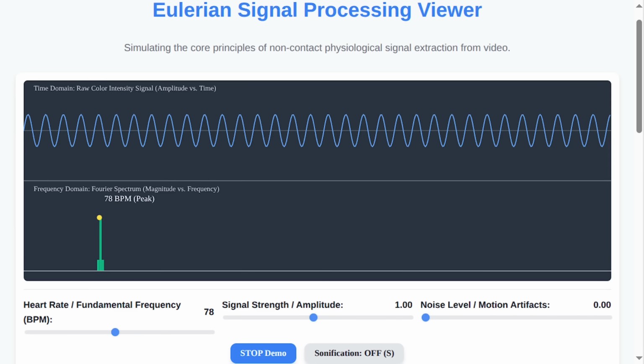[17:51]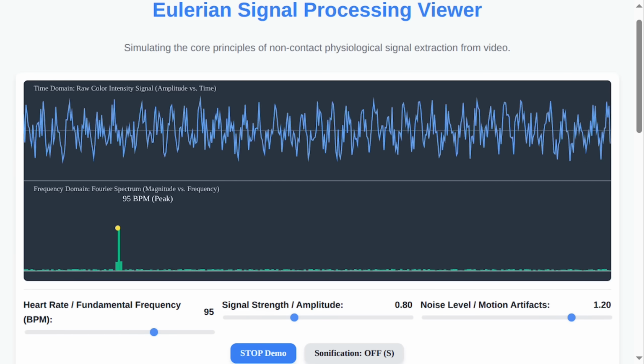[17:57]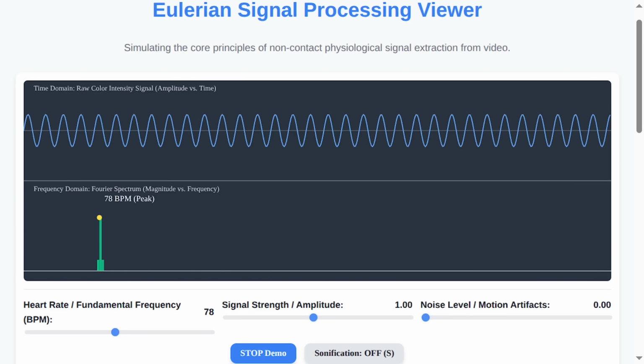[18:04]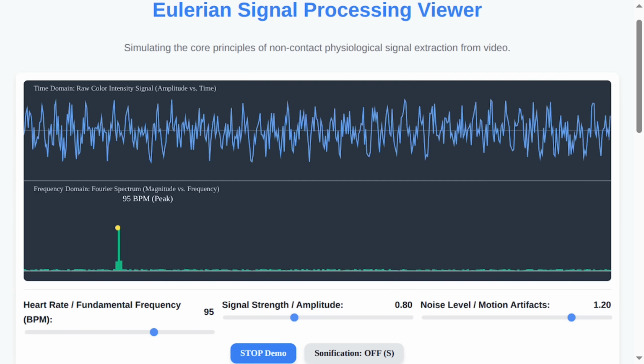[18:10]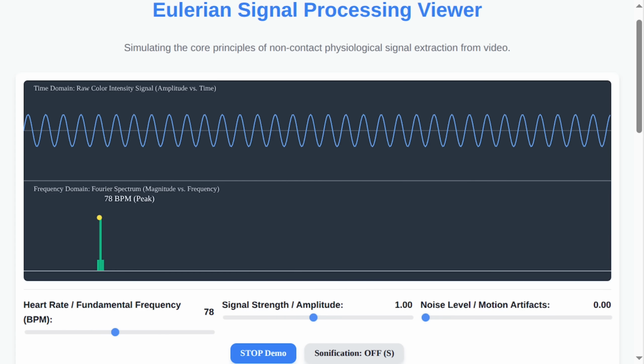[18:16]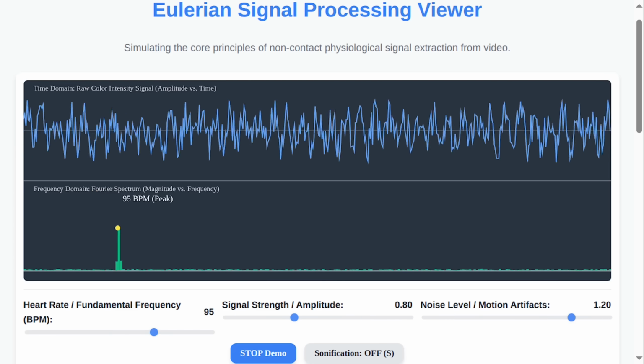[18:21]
Now, watch. Slide the heart rate slider. Whoa, the lonely mountain is moving. It's migrating. So I can basically give this simulation a panic attack just by dragging this slider to the right? You are now in control of its simulated autonomic nervous system, yes. The power is intoxicating.
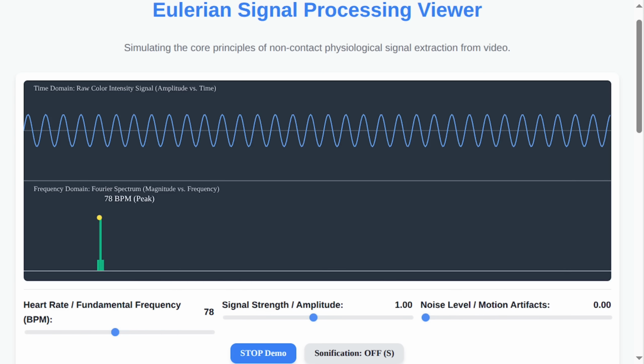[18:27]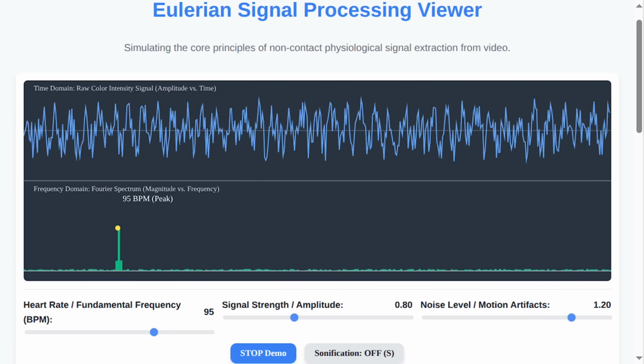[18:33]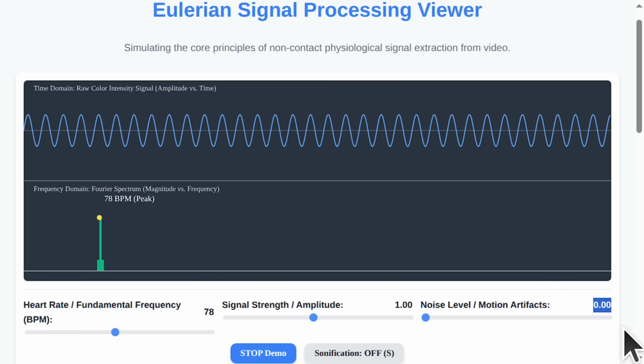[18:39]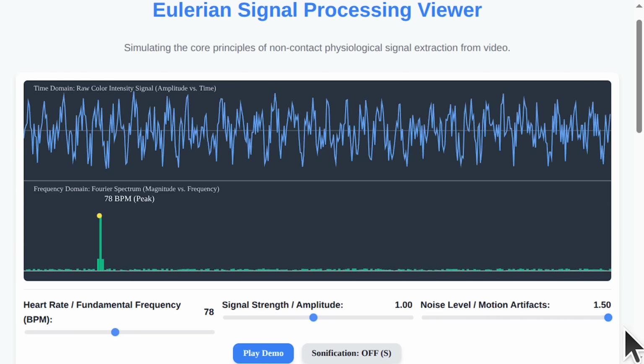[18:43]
Okay, what's noise level? Is that the my cat just knocked over a lamp during the video call slider? That is exactly what it is. Crank it up. See how the top graph becomes an absolute disaster? It's pure static. But look at the bottom graph. Hey, the little green mountain is still there. It's a bit shorter, maybe a little shy, but it's holding on. It's the little peak that could.
That's the whole point. This is the magic. No matter how messy the raw signal gets, the frequency analysis can still find the rhythm, the music hidden in the noise. This is how we can measure a baby's heart rate in an incubator without ever touching them. Okay, hold on. You're telling me this isn't just a toy for simulating my financial anxiety? You can use a webcam to make sure a tiny human is okay? That's the real-world application, non-contact physiological monitoring.
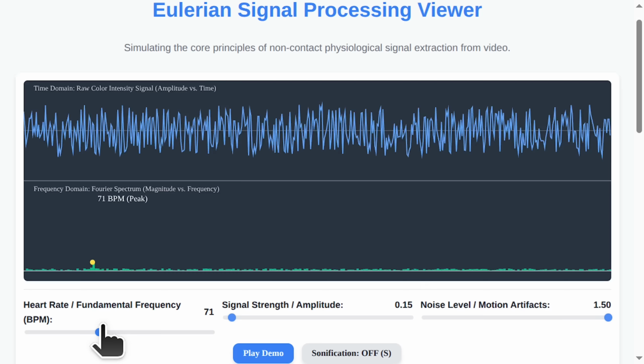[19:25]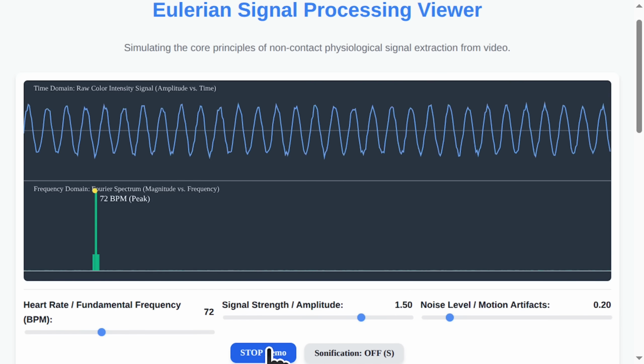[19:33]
And it gets better. You see in the code the simulate FFT function? You say see in the code like I didn't just spend 5 minutes trying to figure out how to unmute myself on our last call? Assume I'm a golden retriever who's happy to be included.
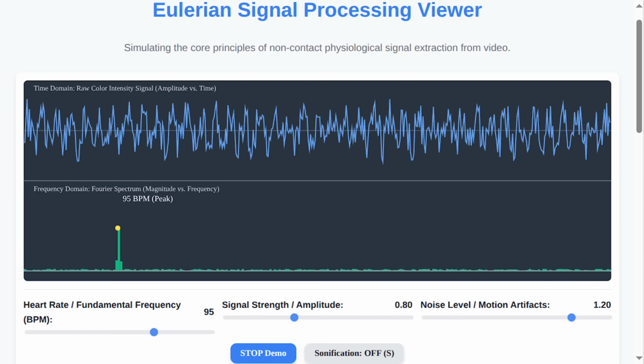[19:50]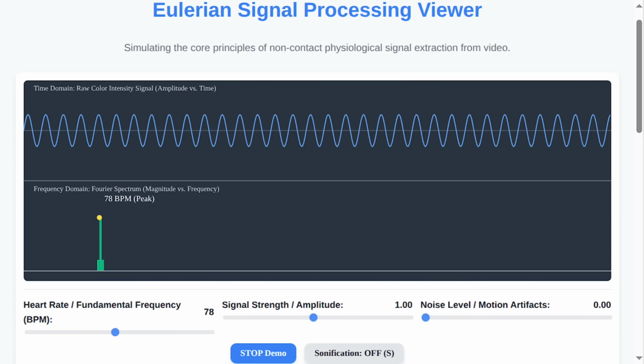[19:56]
Fair enough. Right now, I'm cheating a little. I'm telling the bottom graph where the peak should be, based on the slider. It's a magic trick. The next step is to use a real Fourier transform algorithm and let it discover the peak on its own from the noisy data I'm generating. So right now you're the Penn and Teller of signal processing. You're forcing the card, so to speak.
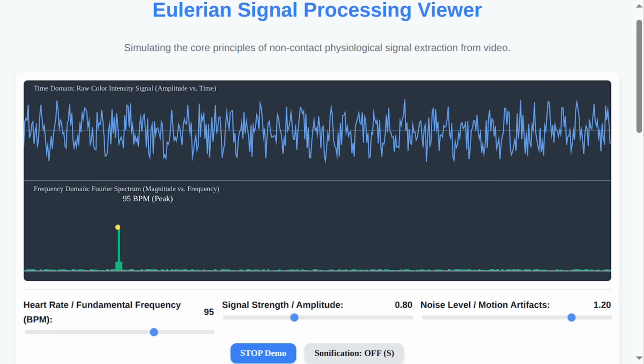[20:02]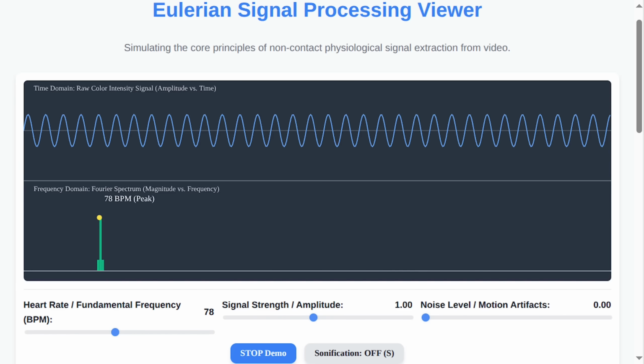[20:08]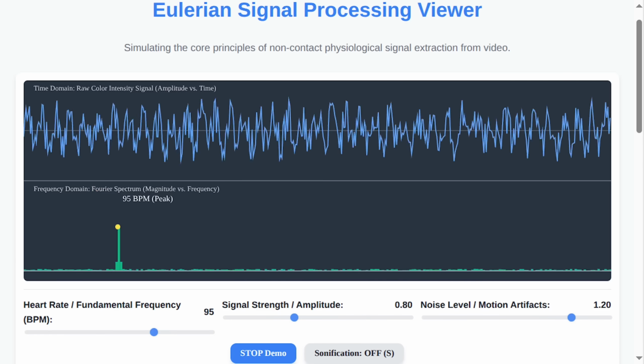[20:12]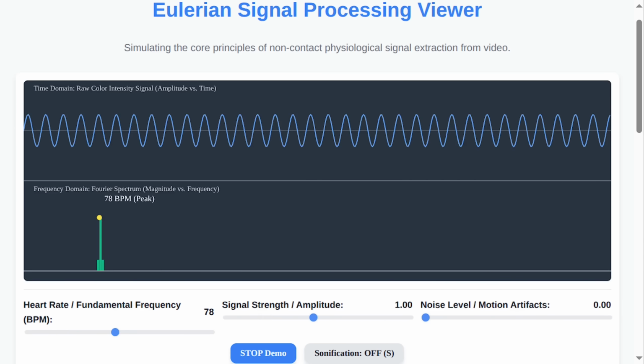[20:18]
I am. It's a teaching tool, but once it's real, we could add a band pass filter. Sounds like something my car needs. Almost. It would let you draw a box around the green peak on the bottom graph, and it would tell the top graph, hey, ignore all the other noise. Only show me the signal that corresponds to this rhythm. And the messy top graph would suddenly turn into a clean, beautiful sine wave.
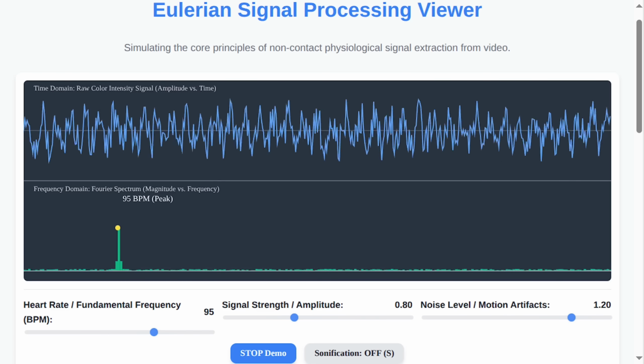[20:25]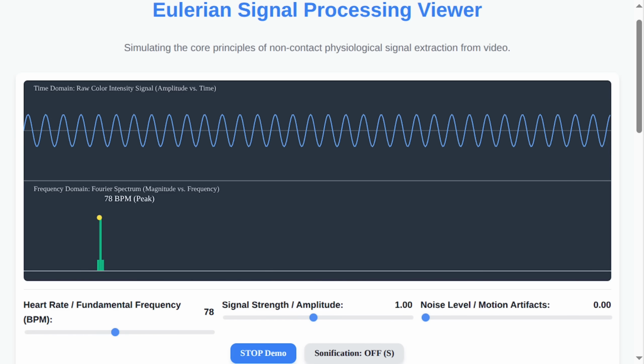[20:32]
So it's like noise-canceling headphones for data? You just tell it to ignore everything except the sweet, sweet sound of blood pumping? That is ridiculously cool. Right?
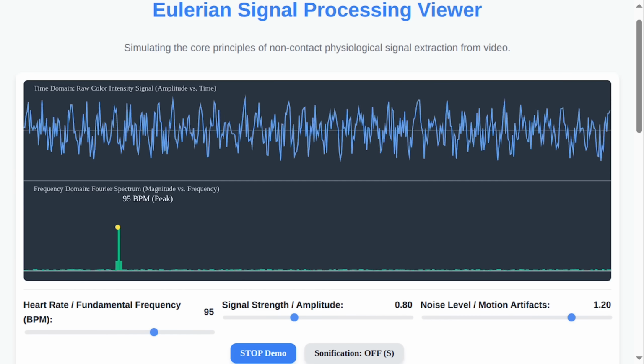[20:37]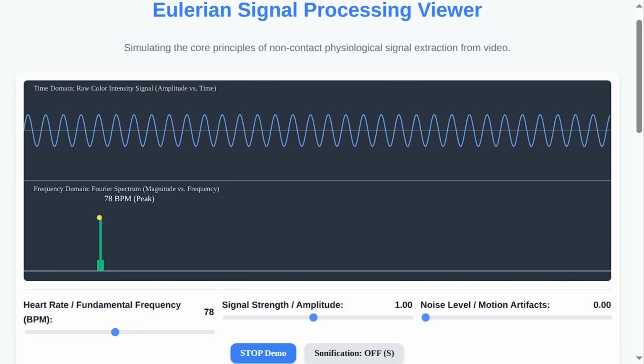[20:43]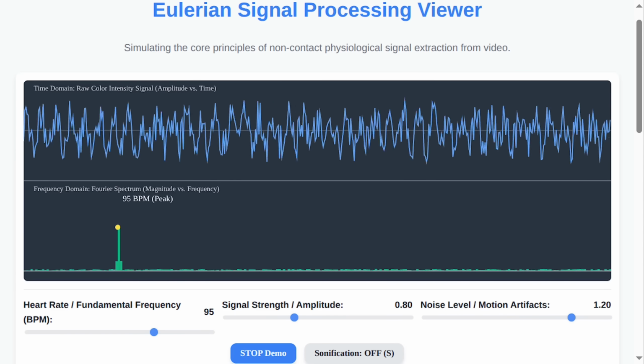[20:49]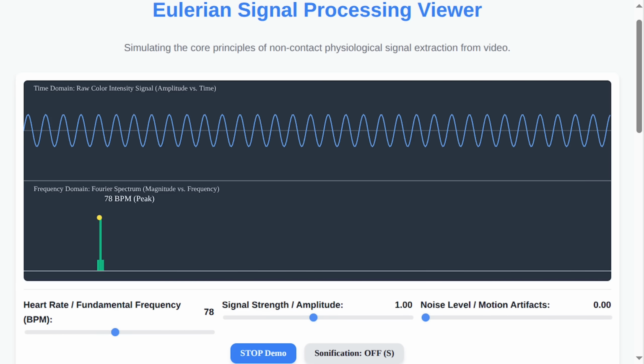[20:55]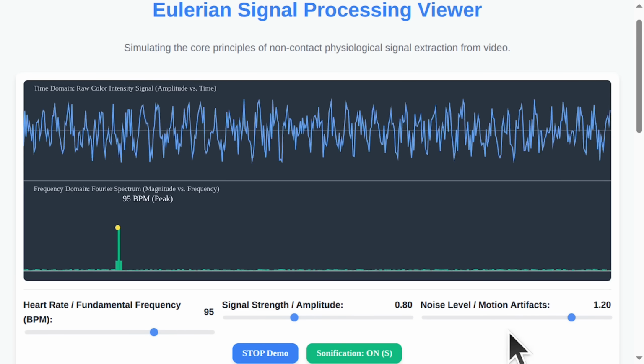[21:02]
So to summarize, you've built a web page that can look at a video of my jittery, coffee-fueled face and tell me with the cold, hard certainty of mathematics just how close I am to vibrating into another dimension. I'd prefer to think of it as finding the music in the noise. Potato, potato. Now, if you'll excuse me, I'm going to turn on the sonification and give this thing a heart rate of 120 beats per minute. It's time for its morning cardio.
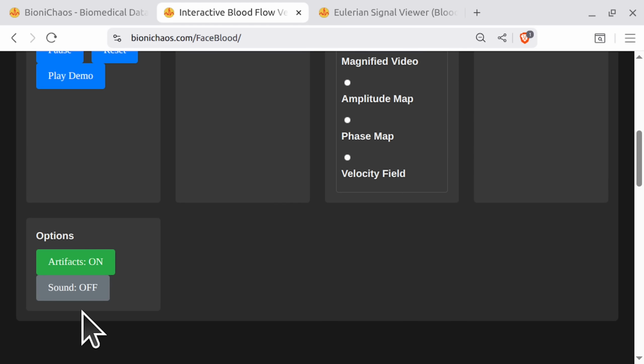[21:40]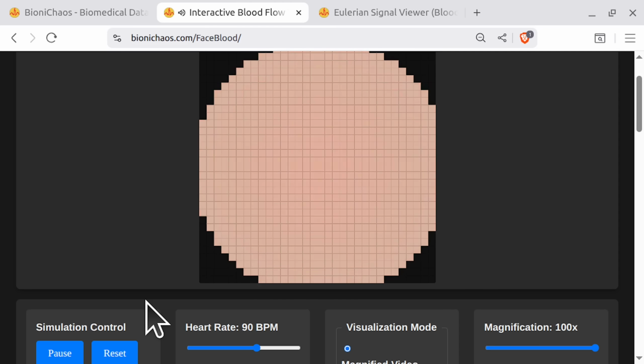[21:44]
To do what the robot says. So, sonification on 120 BPM. Yes, you can see if we increase the noise, motion artifact, reduce the signal at a certain signal level, it can barely find that peak in the frequency domain. Okay, that noise is annoying. The other one had a better sonification to it. That sounds more like a heartbeat.
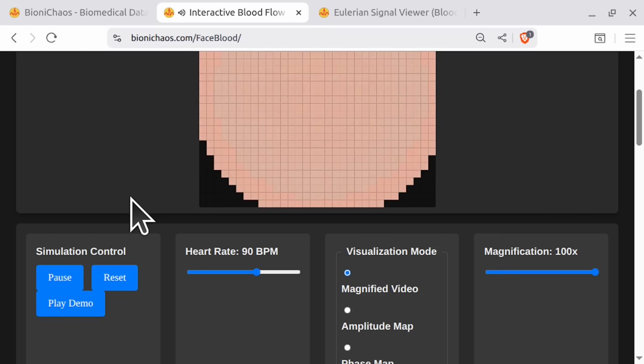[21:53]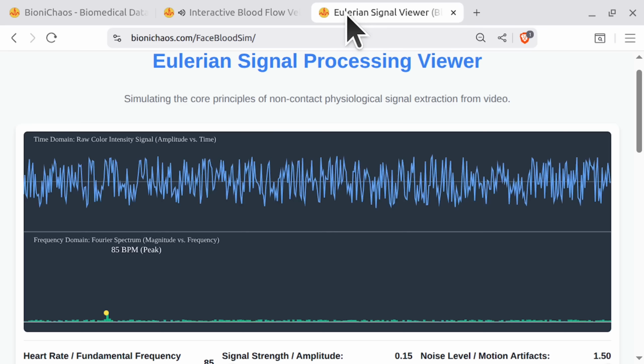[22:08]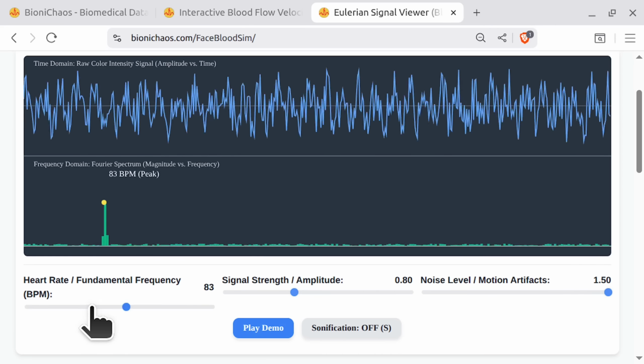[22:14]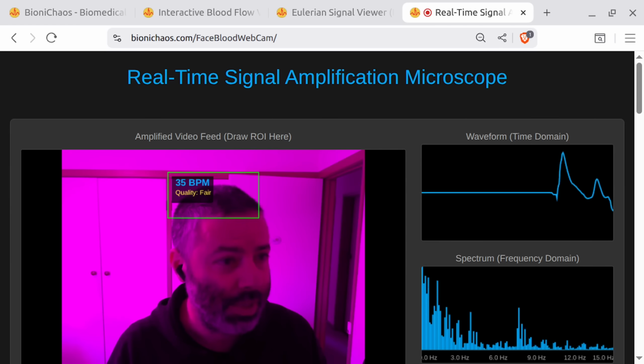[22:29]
And we have the real version of it. So those two are synthetic. One is mimicking a face on the screen, and how we measure blood pressure, blood circulation out of it. The other one is how we actually calculate the beats per minute out of that pulsation, out of that color differentiation. And now we have the real thing.
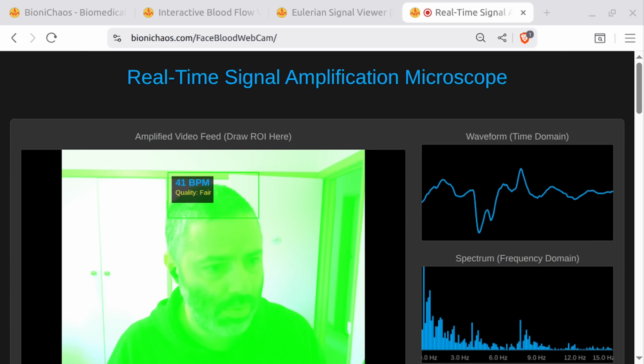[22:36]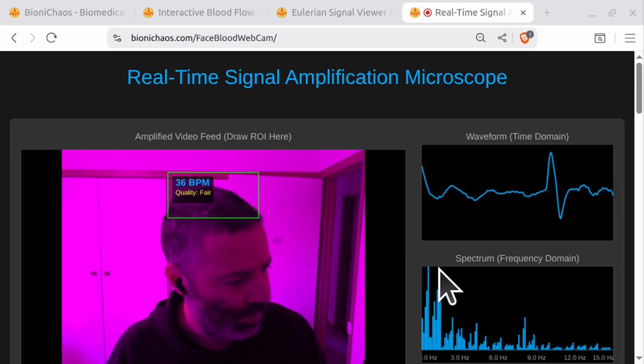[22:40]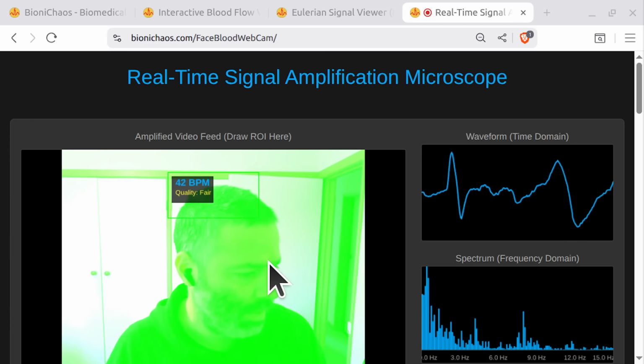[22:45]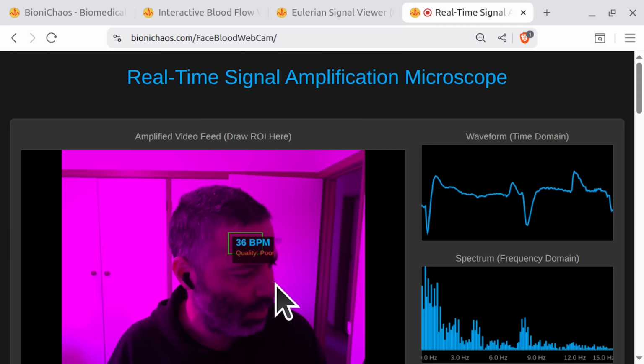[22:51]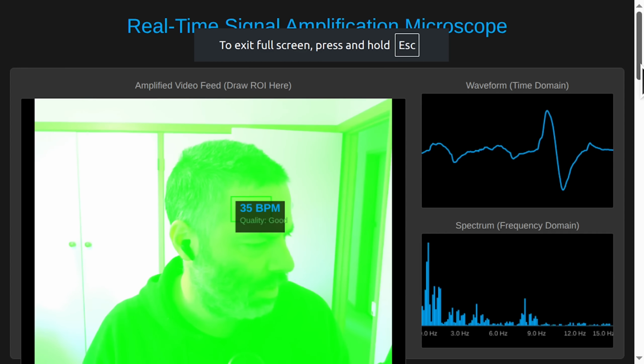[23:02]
You can go try it out yourself as well. I'll talk about this some more. So this is deployed on the website as well. Everything we do is on BioniChaos.com. So in this particular case, you need to select the ROI, the region of interest, for it to work.
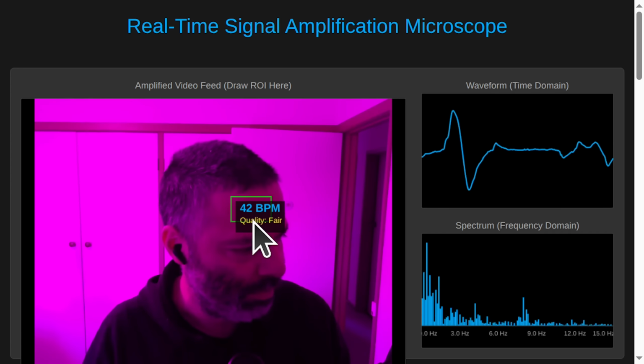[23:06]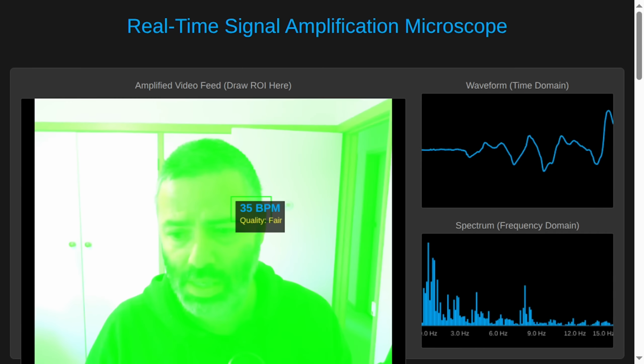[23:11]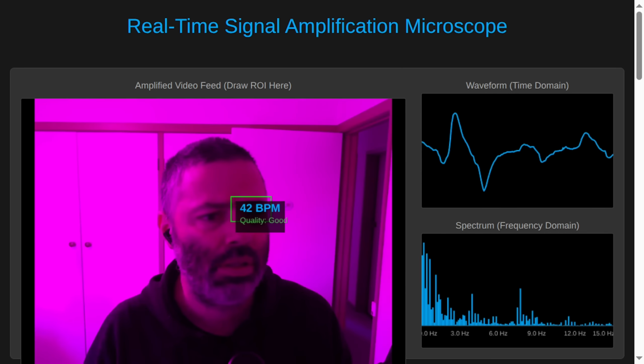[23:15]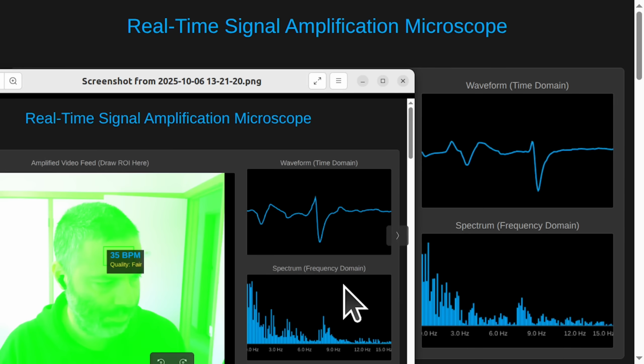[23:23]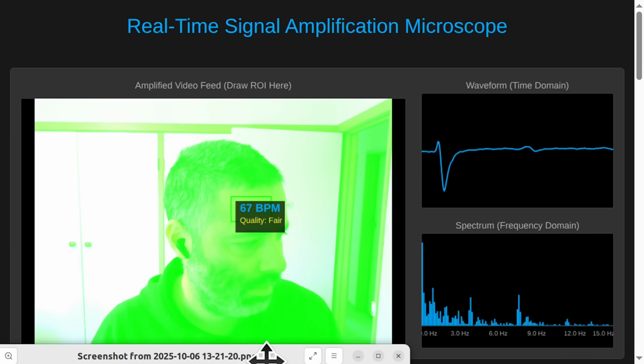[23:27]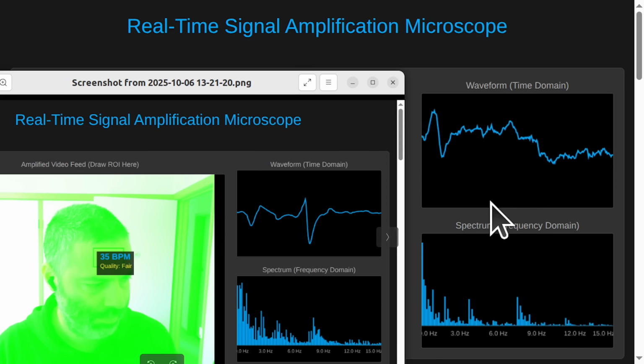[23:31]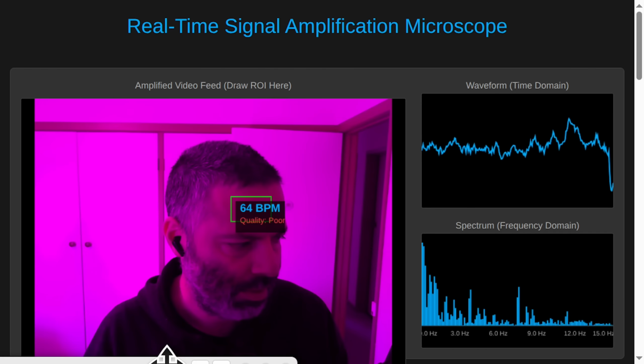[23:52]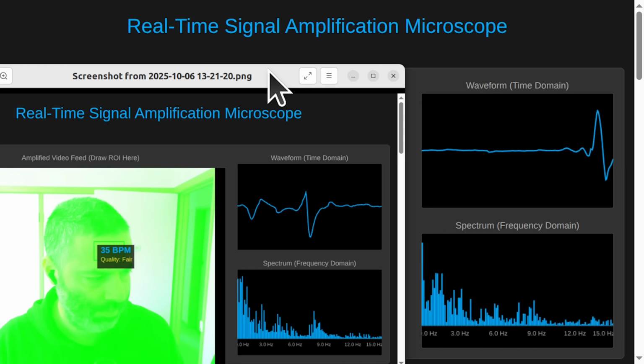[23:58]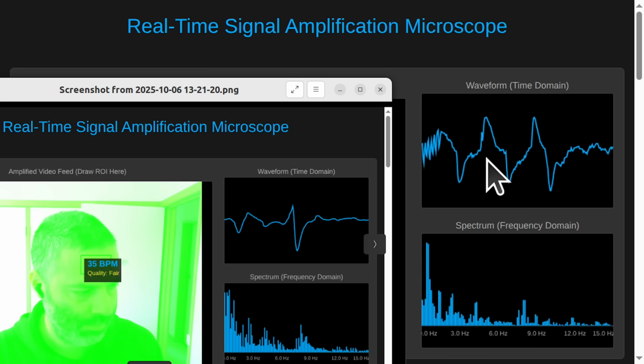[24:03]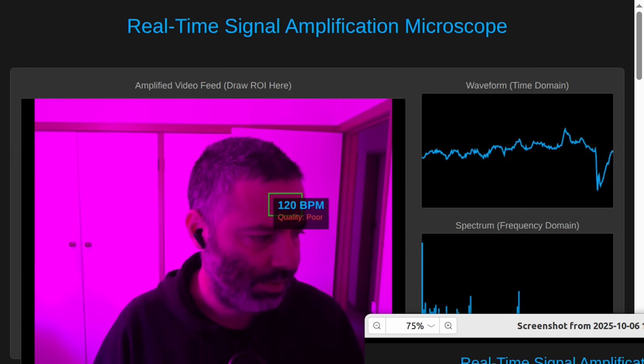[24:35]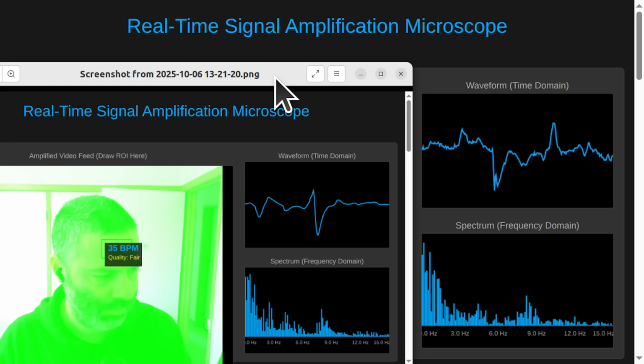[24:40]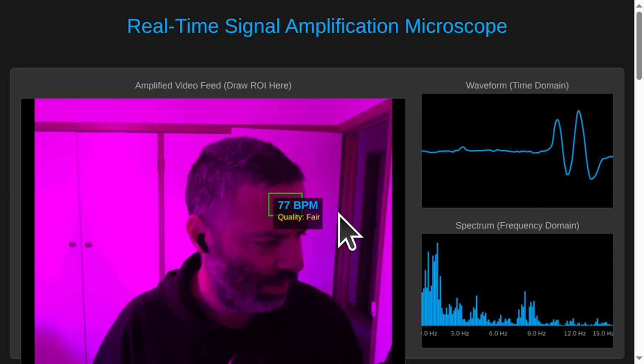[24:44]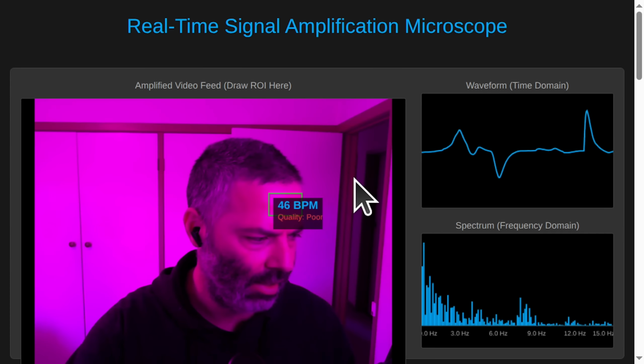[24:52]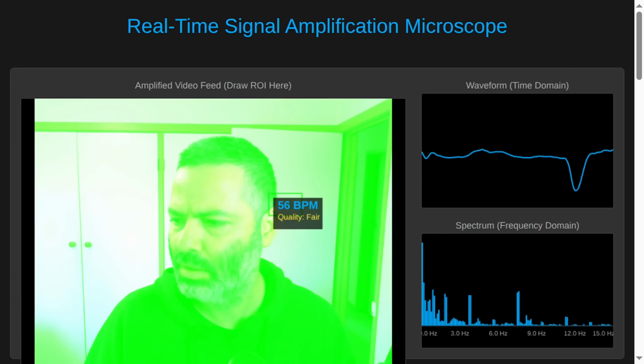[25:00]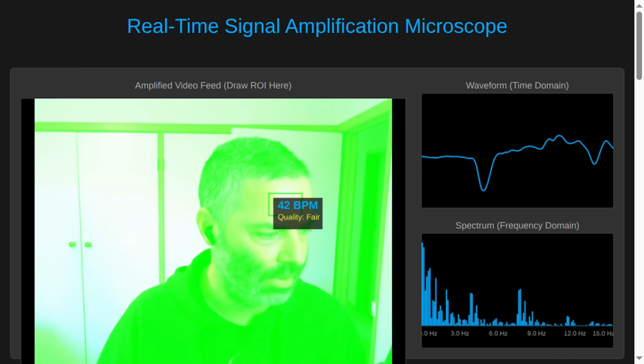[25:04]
We can automate the phase detection. Yes, you can see it. And turn off those flashing. The flashing light's meant to amplify the thing. If we have more light, yeah, light could be problematic because if I'm using this LED light, it could actually distort stuff.
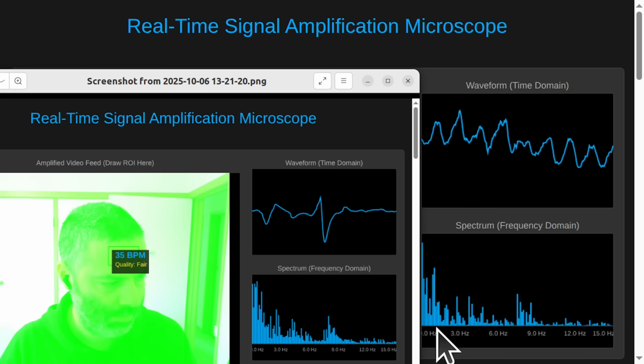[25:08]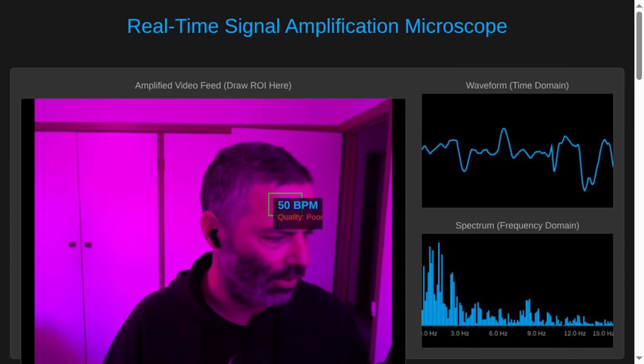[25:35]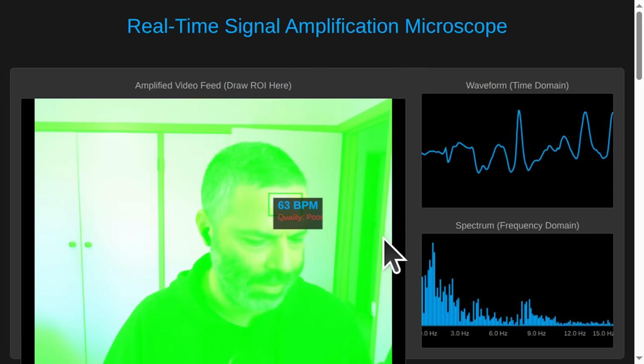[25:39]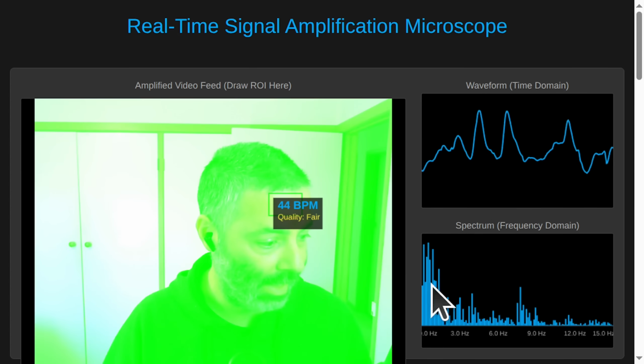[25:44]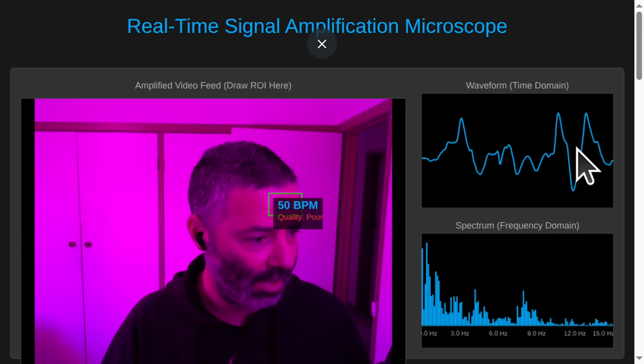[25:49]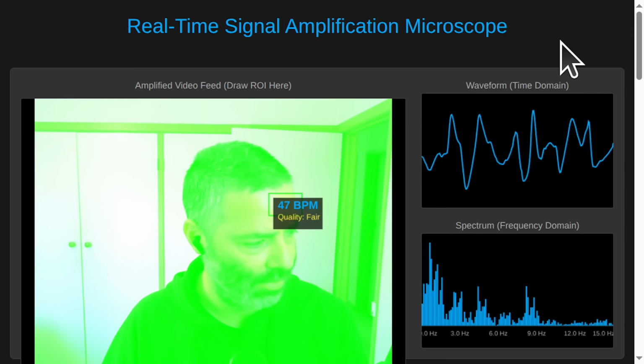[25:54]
Yeah, there it is. If I don't move and don't talk and don't laugh, you can actually recover pulse rate, blood pressure. Not blood pressure because it doesn't have systolic, but you know what I mean, the heart rate. So the beats per minute. So it's working fine. But yeah, not to be confused with this stuff, which is not the correct thing. This is the flashing stuff, which we need to get rid of.
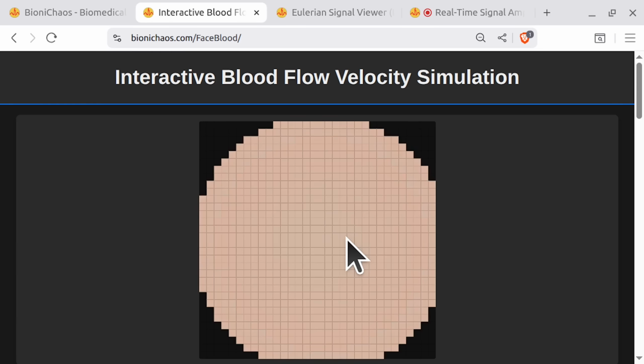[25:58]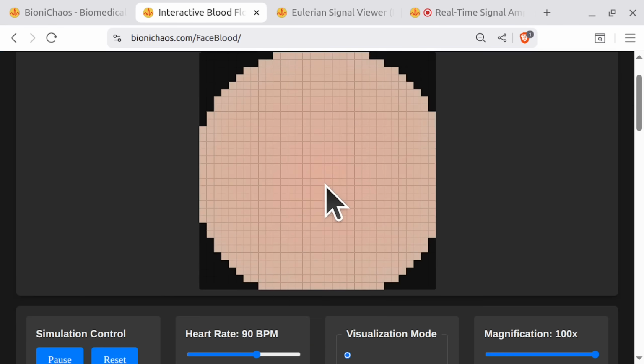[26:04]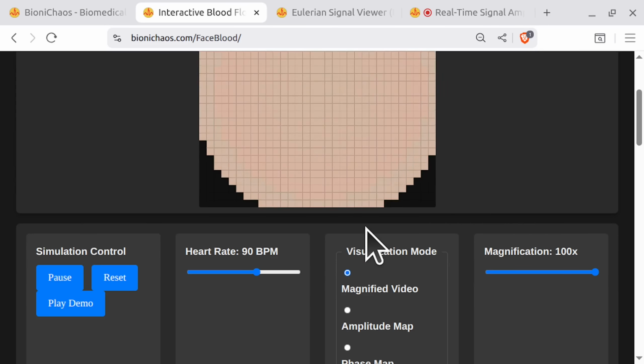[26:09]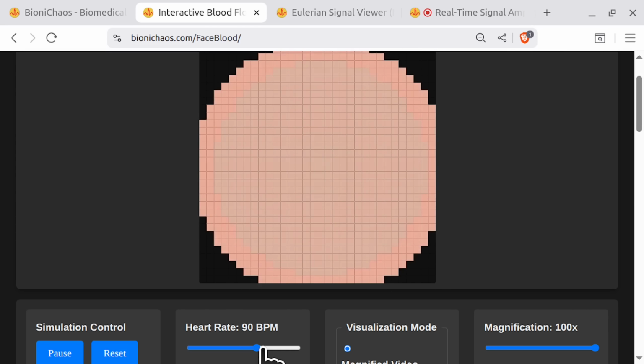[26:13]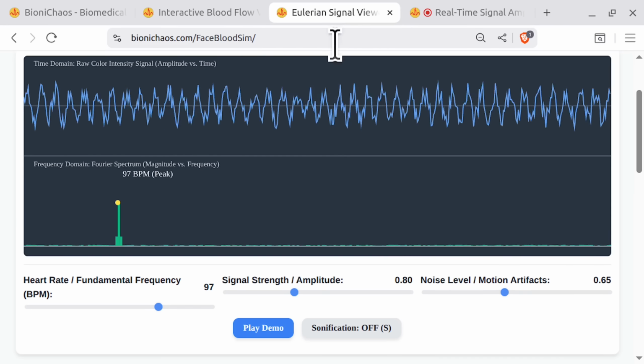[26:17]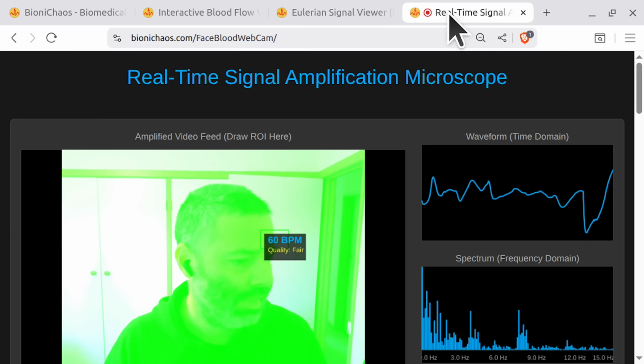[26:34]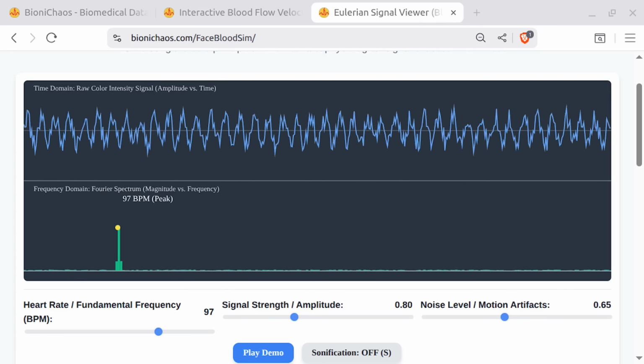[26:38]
Yeah, so we went through this simulation of the theory behind it, of a simulated patch of the skin and how blood is circulating in your face. This is obviously just the simulation, will be faster or slower. That's pretty much all that does. Then we have the theory about how to actually calculate. Well, I mean, there's no equations. We don't like equations, but it's just how we calculate. I actually can bring the thing. I'll put it on a separate screen. See if we can monitor it continuously.
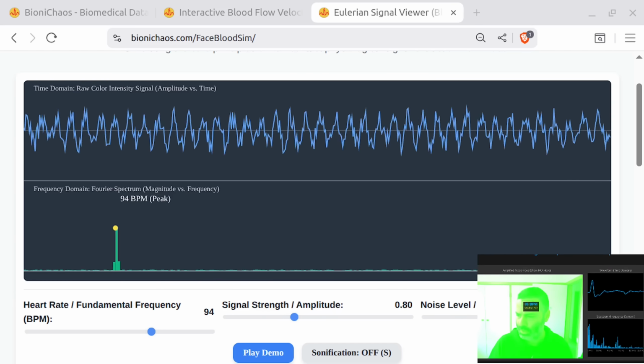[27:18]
Anyhow, so we have the theory behind the signal. Those are fluctuations in the color extracted from the video footage, and then we convert it into the frequency domain to extract the beats per minute. This is all assuming that the main color change is to do with your face being on the screen in the video footage. We can show it on the screen somewhere. So this is the actual.
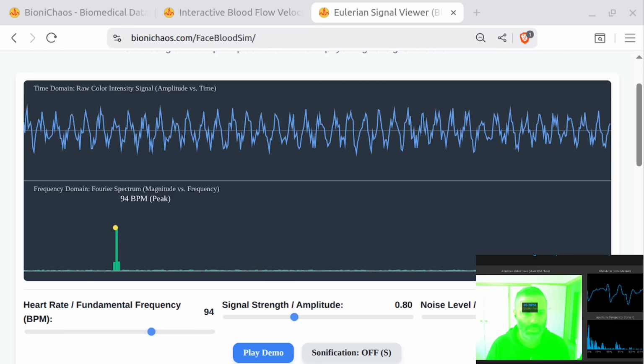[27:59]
A couple of things with that: first of all, we need to again get rid of that. First of all, you can go try it out yourself and see how it works in your lighting conditions and everything. It might work better or worse. That's probably the main reason why it's not used in clinical practice: calibrating this thing will be quite a pain.
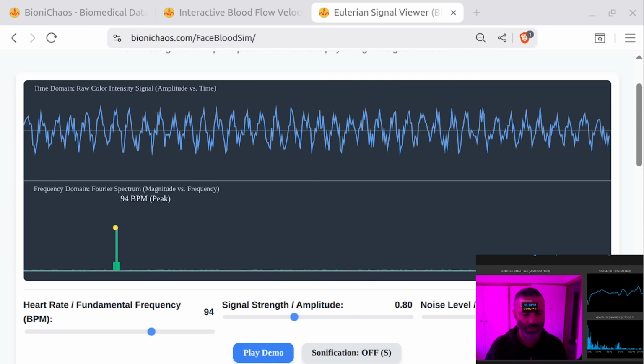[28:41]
Yeah, that thing. Flashing, well now it's just a tiny thing. It's going to recover a good signal, maybe. Anyway, you saw before, by not moving and having better light, you can try it again in a sec. Question is, do we need anything improved with this thing? Yeah, the flashy business. Okay, so let's.
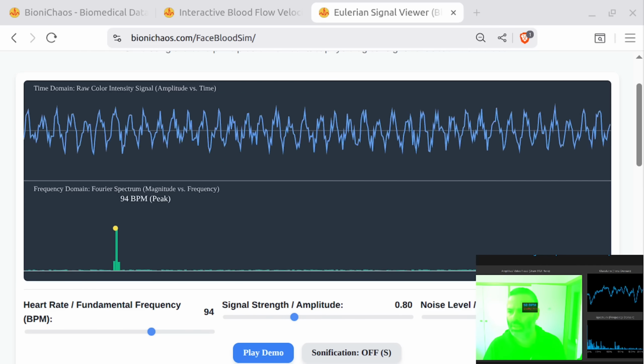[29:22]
So it's extracting RGB as well. Extracting RGB. Start a new chat. So Gemini is pretty good. Gemini made all the code for us. Thank you very much. There will be actually future directions in there as well, indicating what can be done.
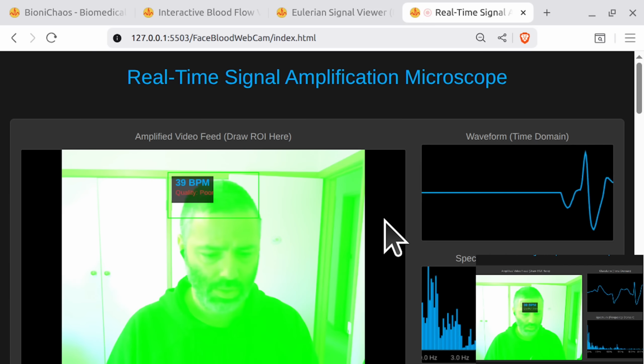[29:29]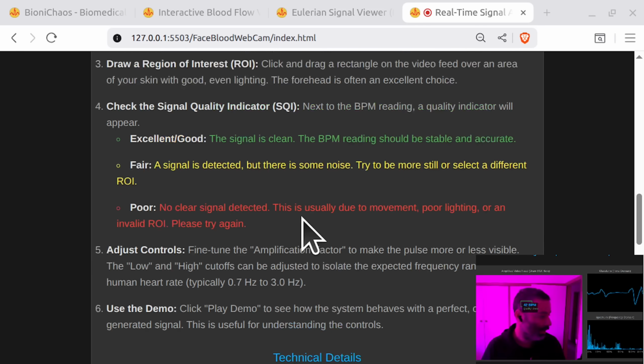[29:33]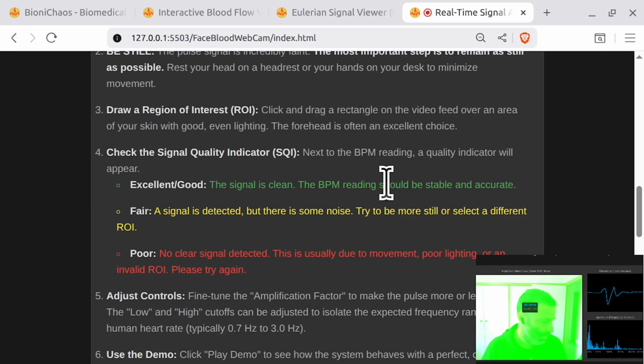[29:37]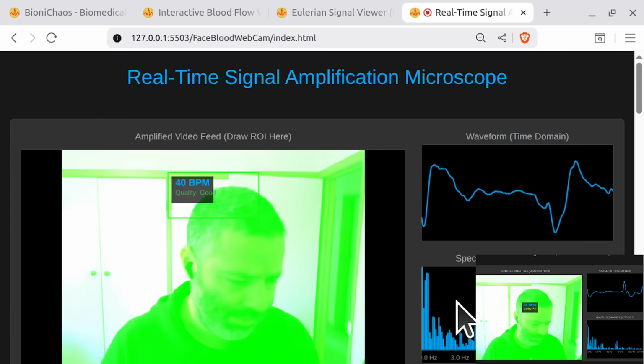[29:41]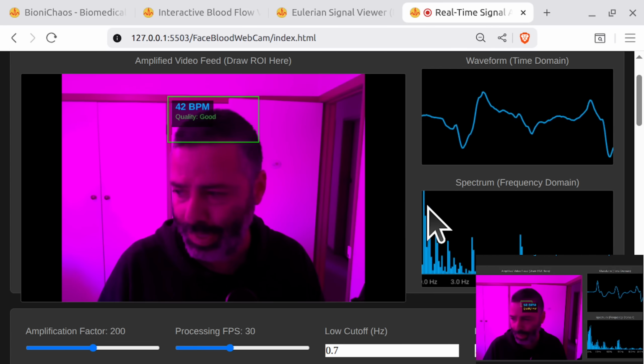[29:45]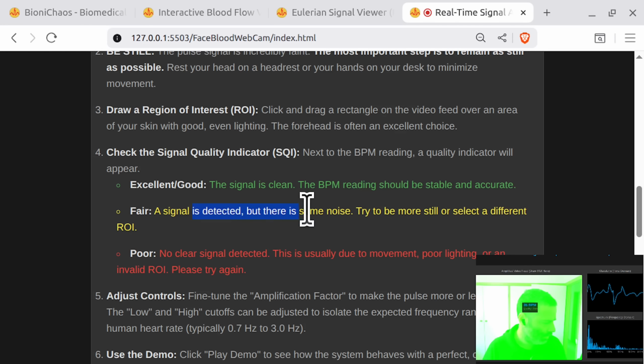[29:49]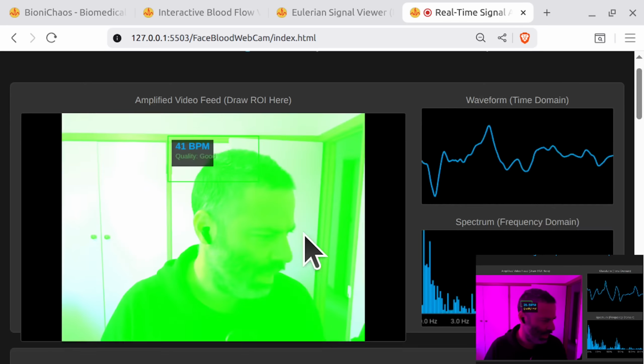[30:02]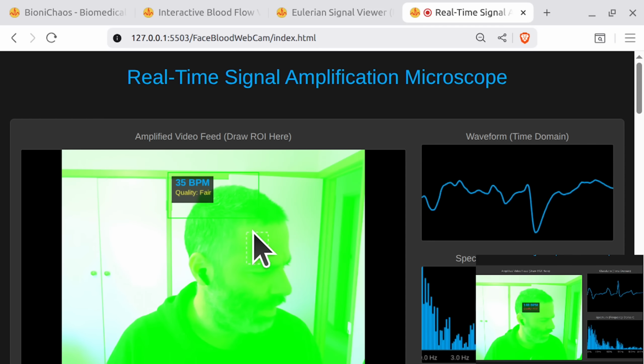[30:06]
We will run a local version. Yeah, you need proper lighting. Check the signal quality. Should be stable. Yeah, so this thing in the FFT should have a nice clear peak. What else? Yeah, I have to stay still because it's actually extracting minor changes and amplifying them as well. Changes in color in the video footage within the ROI, which we can adjust. We should be able to adjust it manually.
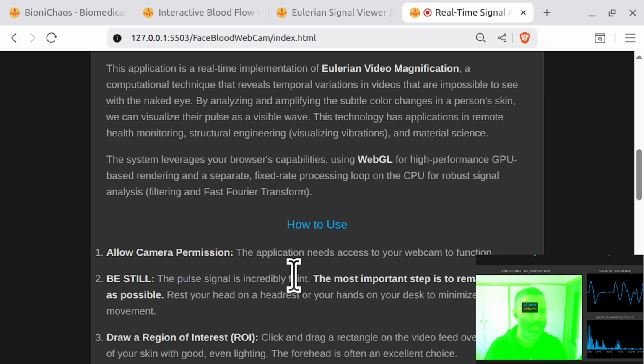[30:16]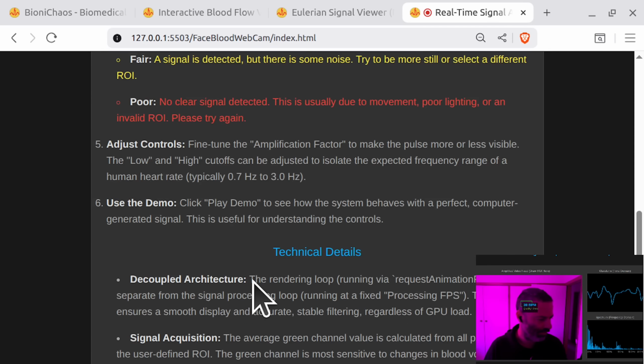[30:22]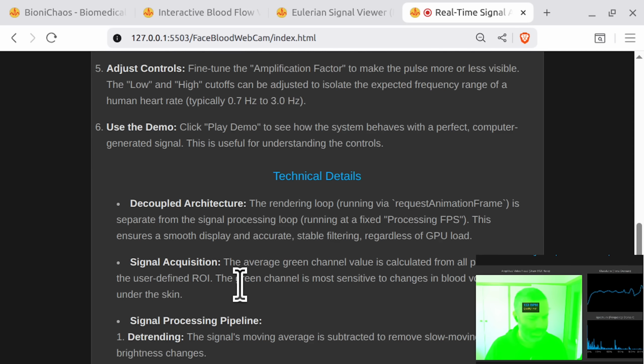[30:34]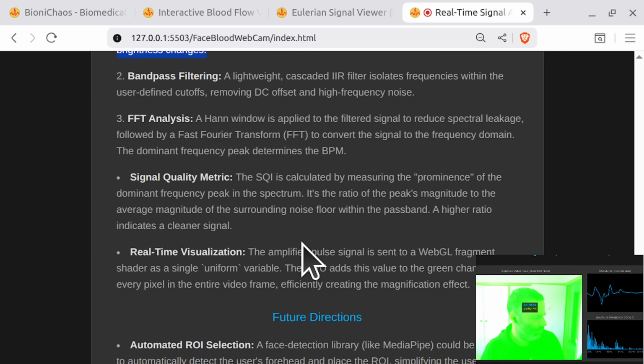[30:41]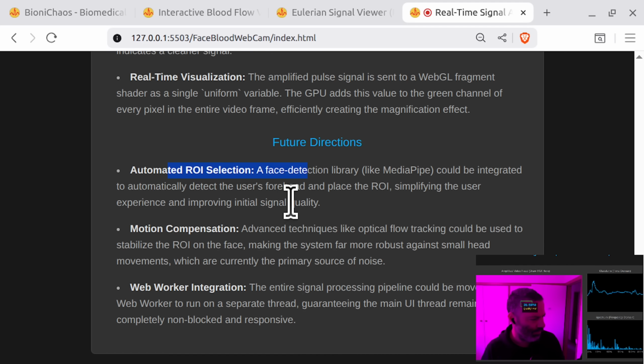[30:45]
We should be able to add a functionality that will make it possible to adjust it automatically, to just find your face. Ideally, we'll find all the skin within the face. I haven't seen that one done before. There's some kind of making a lot of assumptions of where the skin is. Yeah, future direction, automated ROI selection, face detection library. Yeah, MediaPipe will do. Could be integrated to automatically detect the user's forehead. Wonder if there's anything that could find any skin.
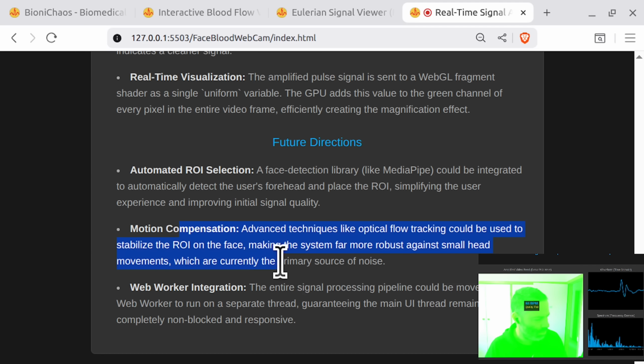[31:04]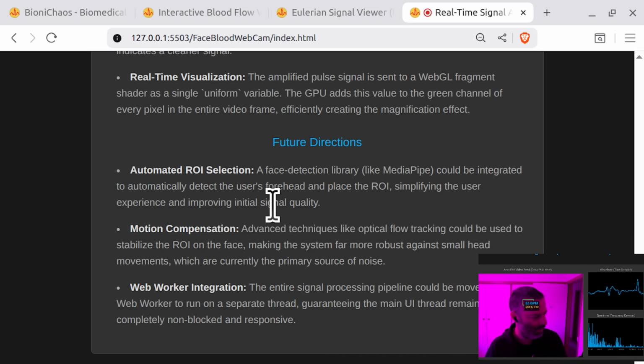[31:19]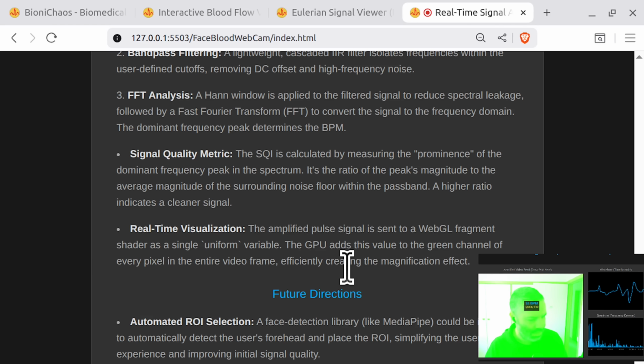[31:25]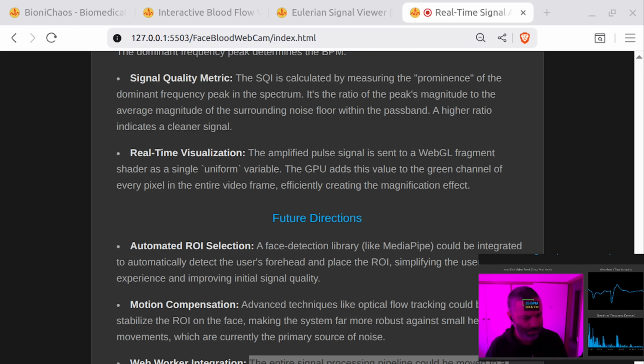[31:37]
Motion compensation, advanced techniques like optical flow tracking could be used to stabilize the ROI on the face, making the system far more robust against small head movements, which are currently the primary source of noise. That's correct. Yeah, web worker integration, we're not gonna do that. But I'm mainly wondering with the amplification. Let's talk to this thing.
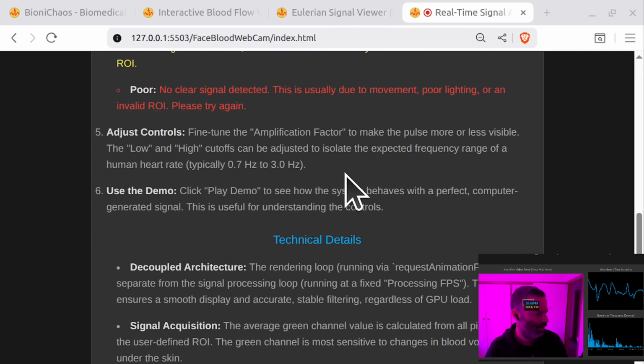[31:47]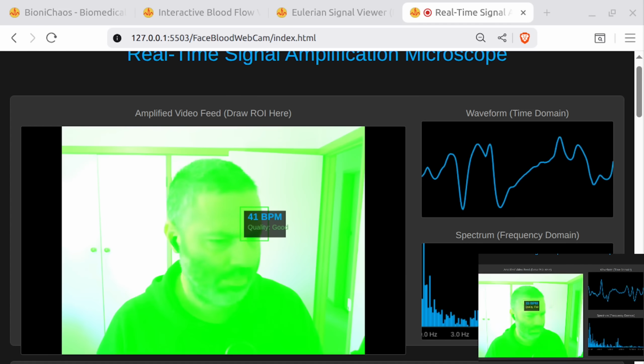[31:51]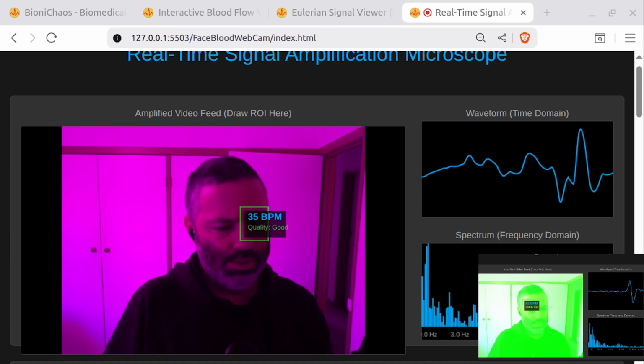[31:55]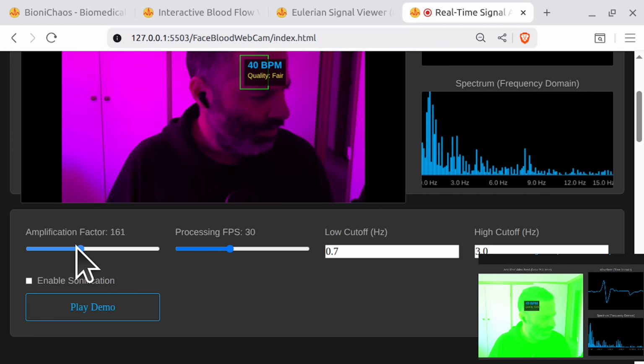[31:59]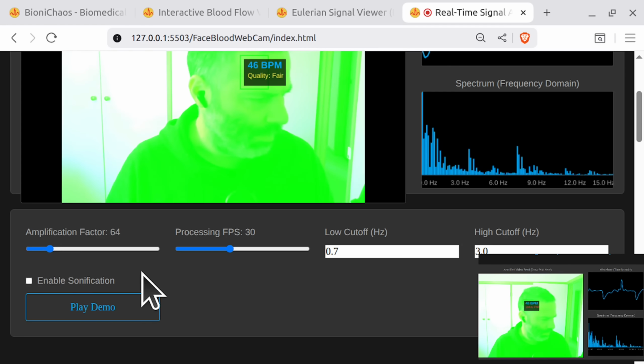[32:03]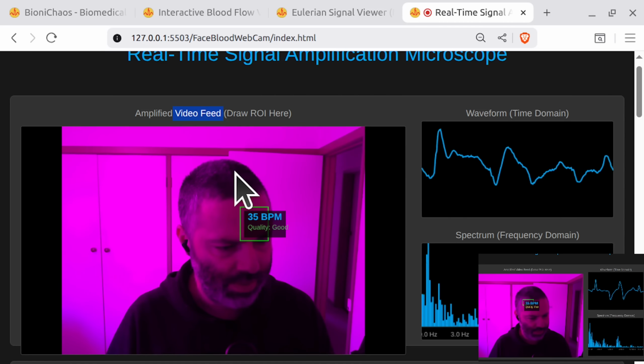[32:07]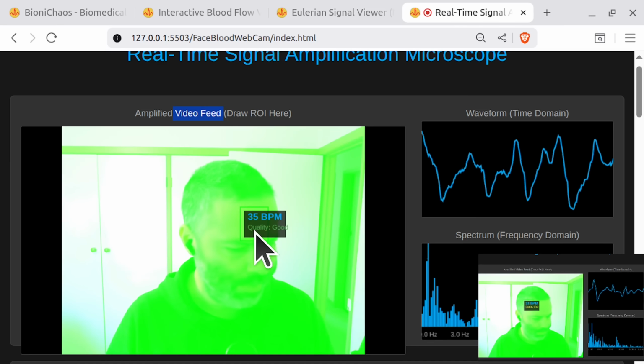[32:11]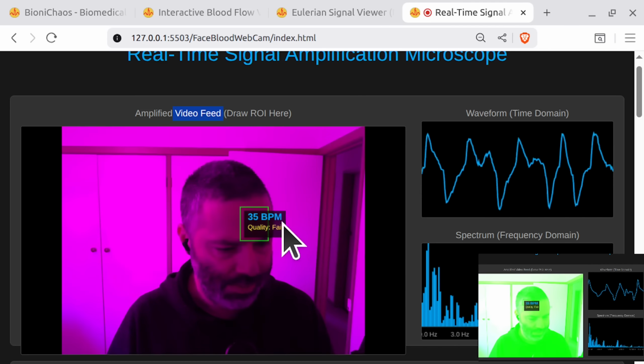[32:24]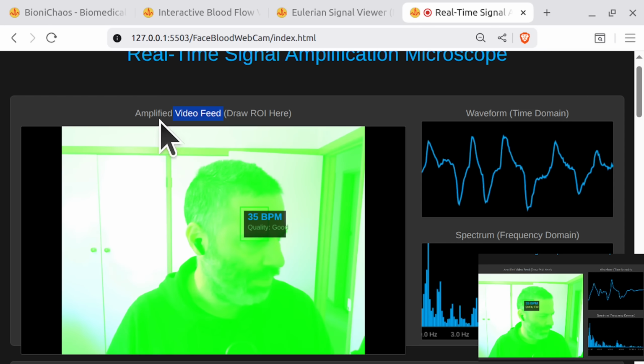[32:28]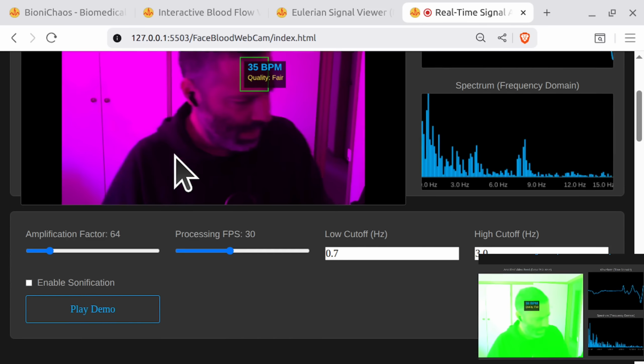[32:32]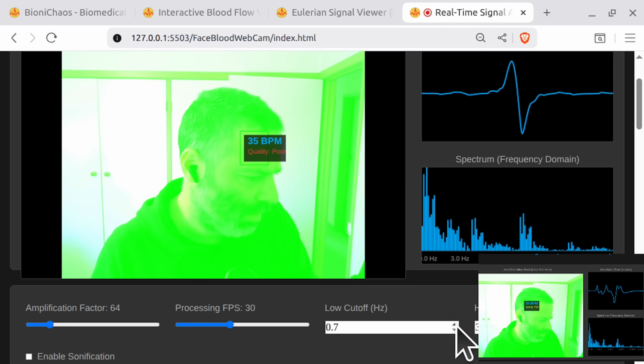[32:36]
Yeah, because currently it's causing trouble. Okay, so the amplification seems to be currently too high, but also the amplified video feed is flashing. The idea was that we will amplify that blood flow within the area of interest, within the ROI, within the region of interest. But what's currently happening is the whole canvas, the video feed, is flashing with different colors. I think, yeah, it's not working very well.
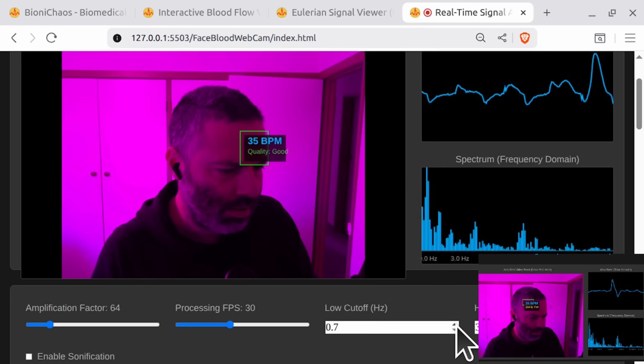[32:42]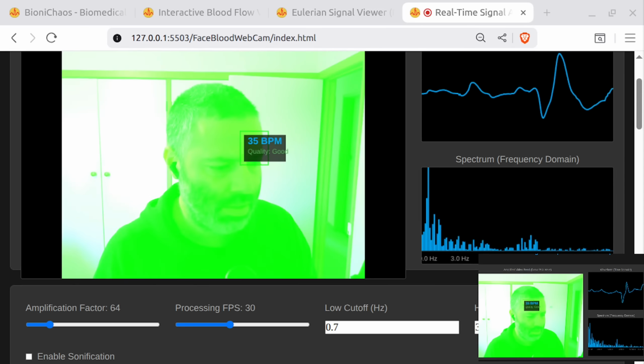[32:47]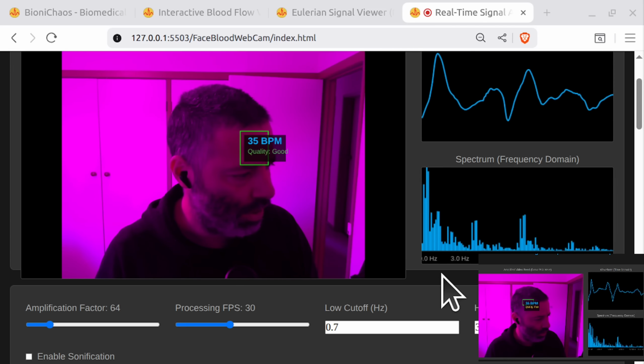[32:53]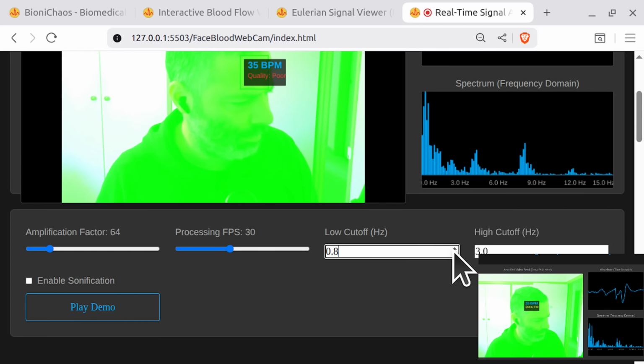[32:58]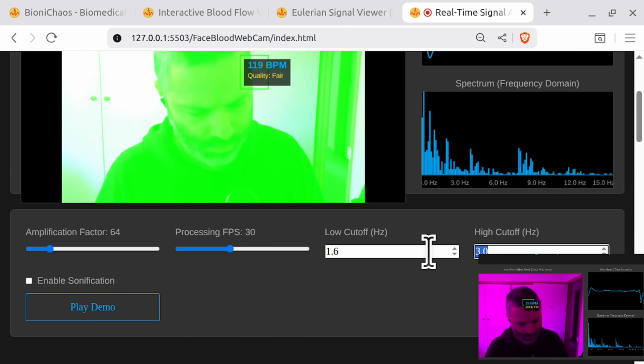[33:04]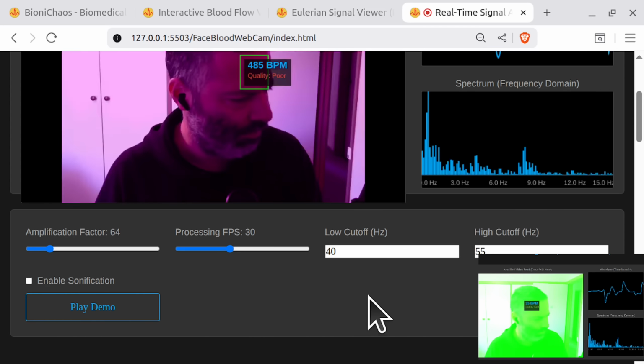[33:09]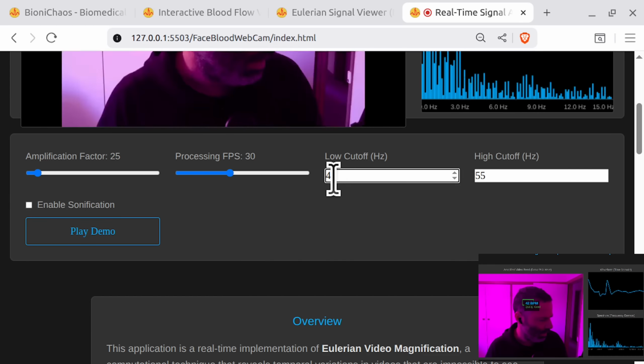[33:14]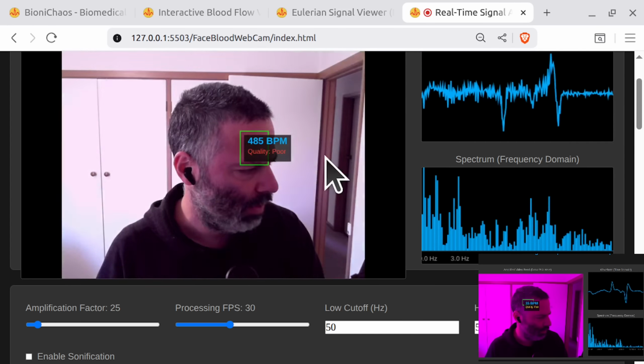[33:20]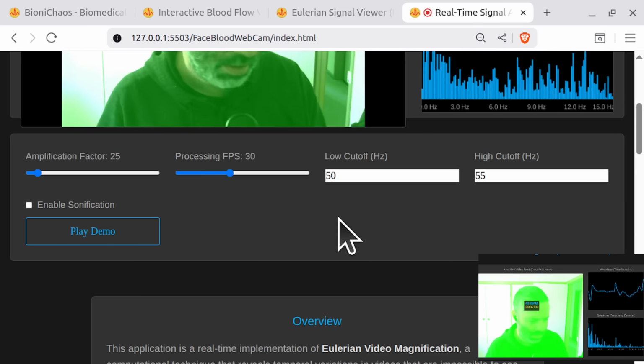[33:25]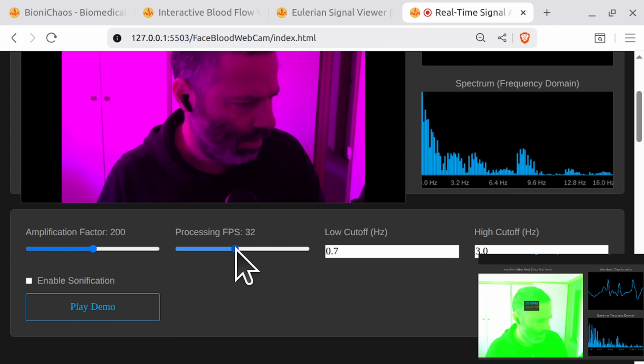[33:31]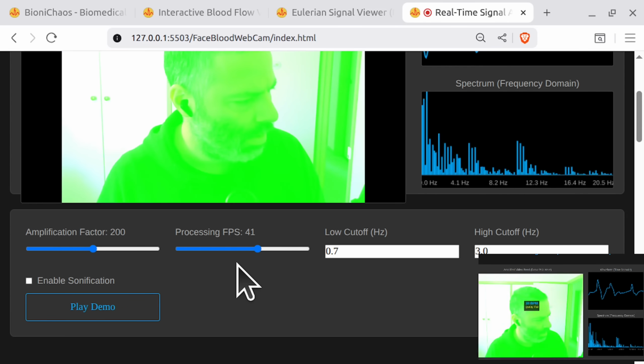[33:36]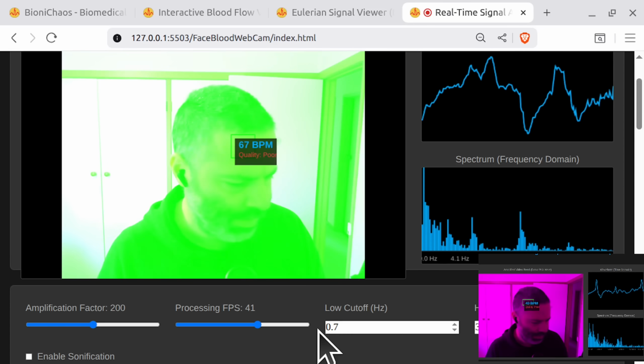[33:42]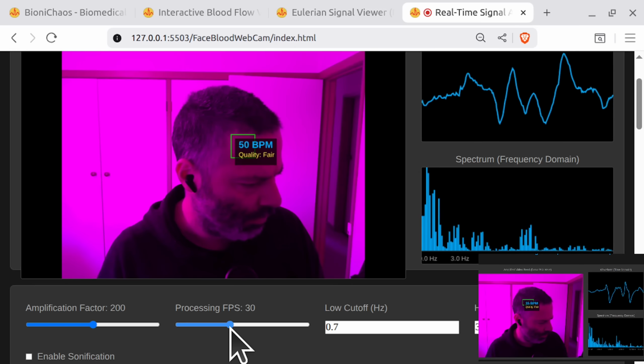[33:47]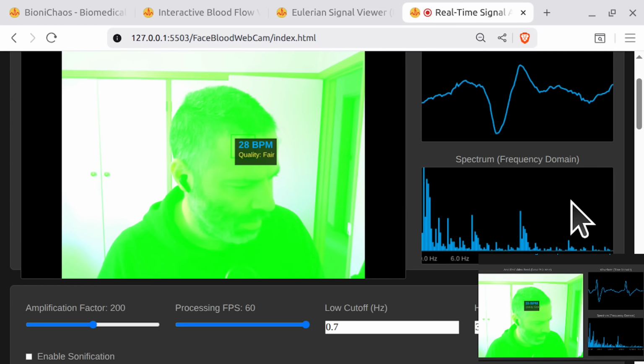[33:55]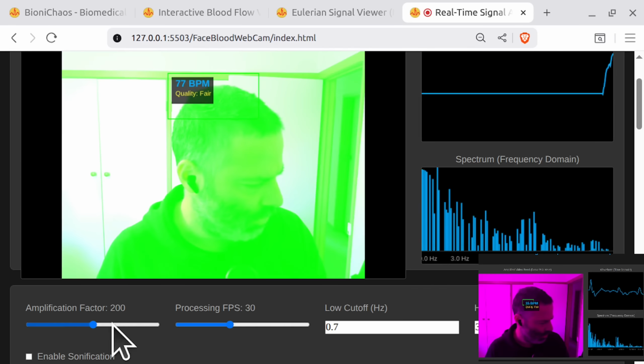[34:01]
Let's see if Gemini 2.5 Pro has any suggestions on that. Obviously the cutoff should be what it is, but just for considering having so much noise, if we make it say 40 to 55, then it's flashing like crazy. It's essentially too sensitive. Let's reset it for a sec. Your frames per second will define the frequency domain there. So if you have 40, the Nyquist rate will be half of that. Taking into account we default to 30, we can go all the way up to 60. It's not actually 60, it's like 59 something. But 30 should be plenty.
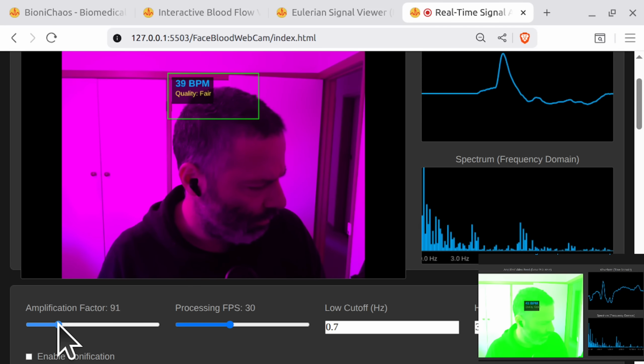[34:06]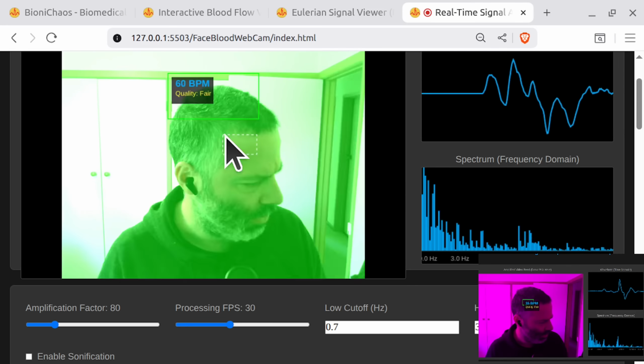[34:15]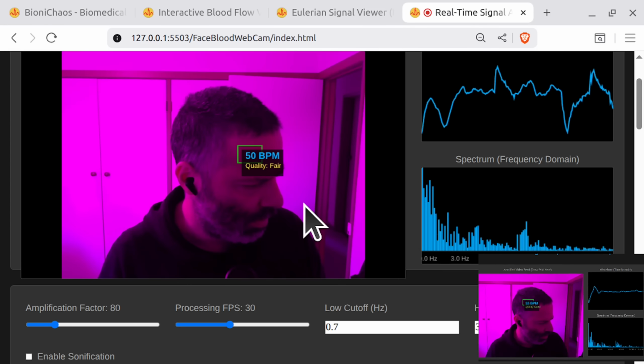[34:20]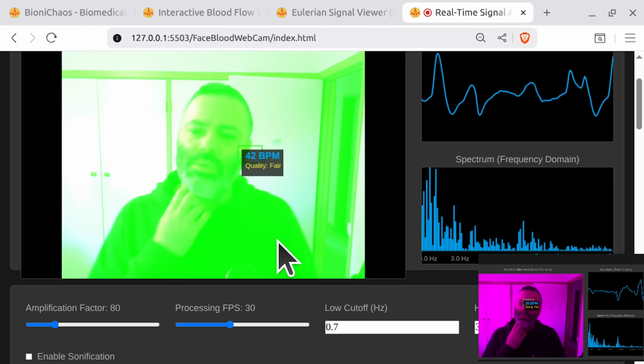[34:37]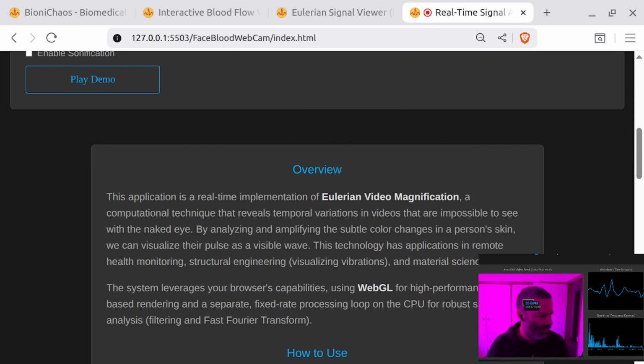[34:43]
I think amplification of what was it, 200? I think it's too much. We need around 80. We don't need to amplify that much. Currently we don't have automated ROI selection, so we have to do this. And the problem with that flashing thing is that the color, the green and red, or magenta, is going into the video feed, and that's what's being detected as my BPM, which is obviously wrong. We want to turn it off. Why did it regenerate the code for us?
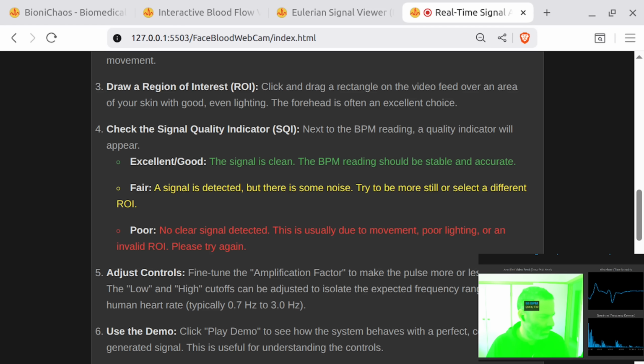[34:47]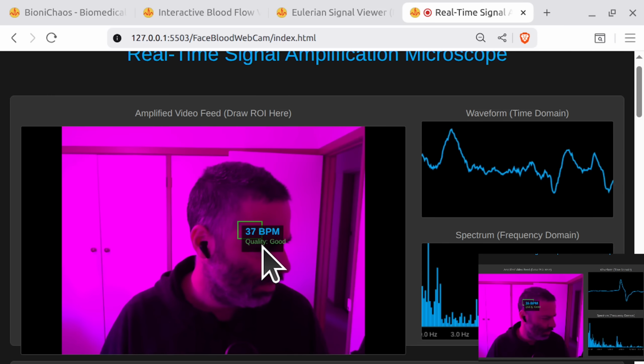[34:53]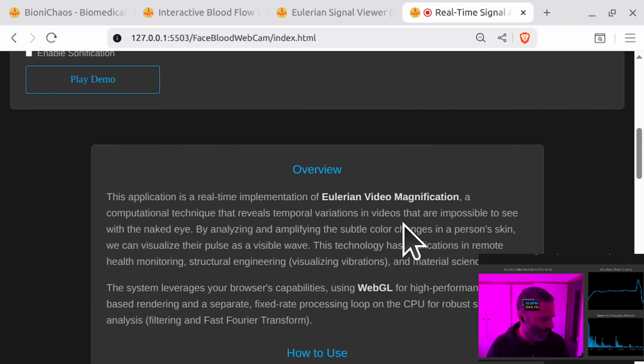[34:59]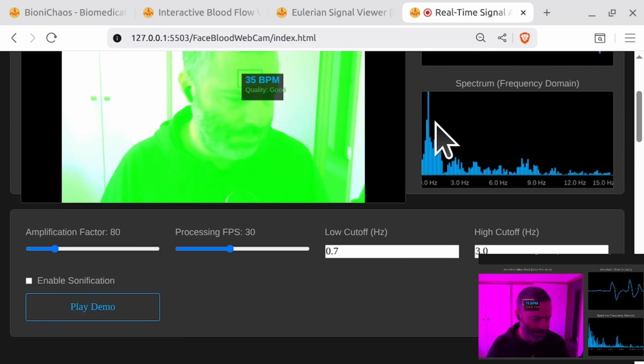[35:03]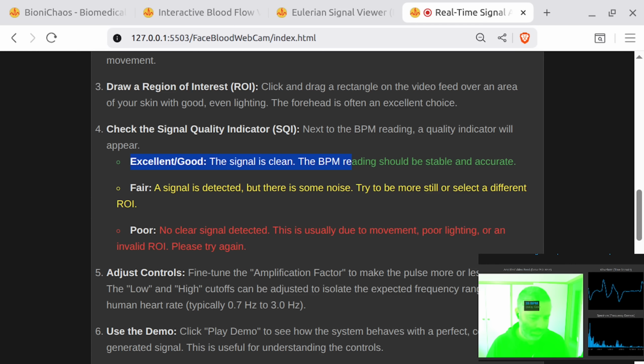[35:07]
Yeah, we do measure signal quality as well. And we have green, signal quality is good, reading should be stable and accurate. I think it's actually looking at how much FFT peak we have. Yeah, that's a real problem. Don't fall for it. Don't make a rookie mistake. Whatever you have on the screen, say if you're watching a YouTube video with flashing lights and you're trying to record your beats per minute heart rate, then it could be wrong because it's essentially just recording the flashes on the screen. So I'm trying to get rid of it.
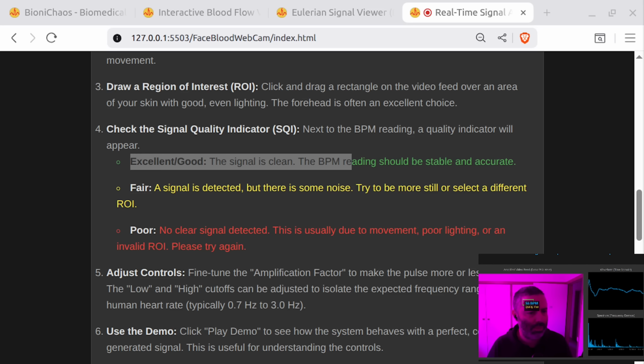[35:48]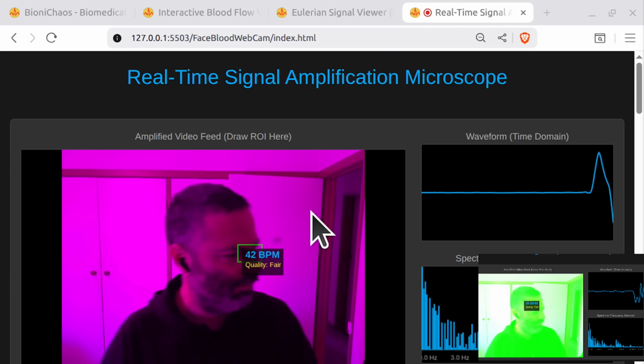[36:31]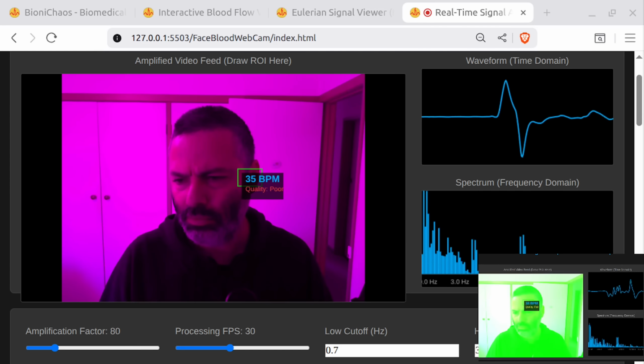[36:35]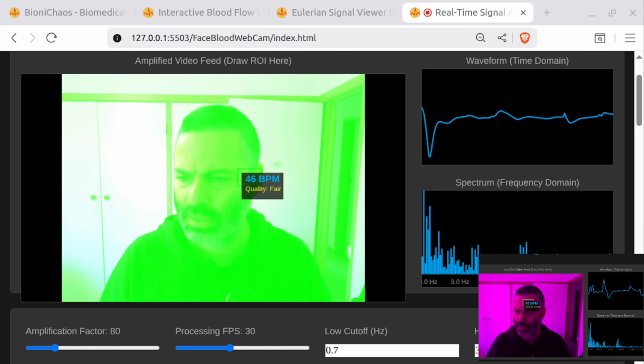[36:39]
What did it do? The twofold, both problems are related to how the amplification effect is being rendered. Yeah, we don't want that rendering of flashy stuff. Make the shader ROI aware. We'll pass the ROI coordinates to the WebGL. Yes, and we are using WebGL, so using the graphic card in the browser. A fragment shader. The shader will then check if the pixel it's currently processing is inside those coordinates. If it is, it applies the amplification. If not, it leaves the pixel alone. This will contain the effect perfectly within the box you draw. Yeah, so we wanted the flashy bit just in the ROI. I think that's what it means.
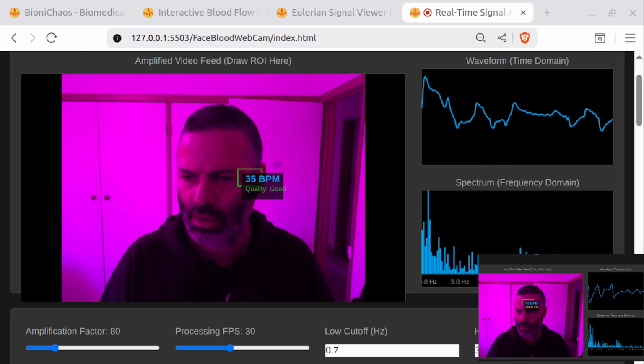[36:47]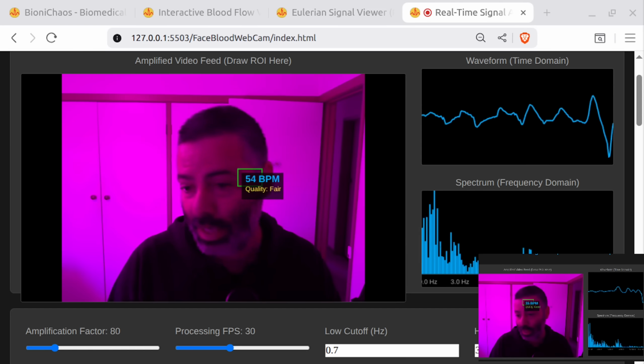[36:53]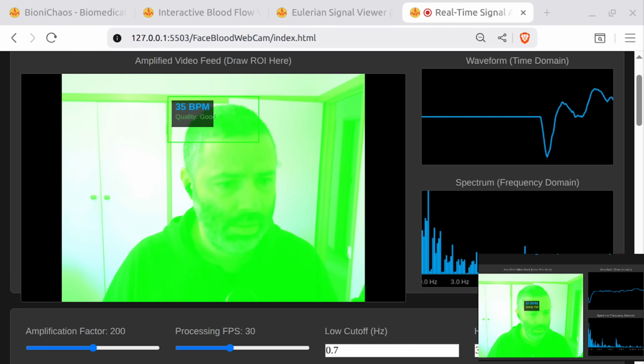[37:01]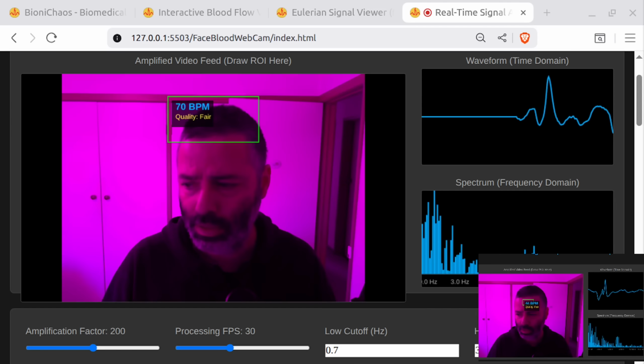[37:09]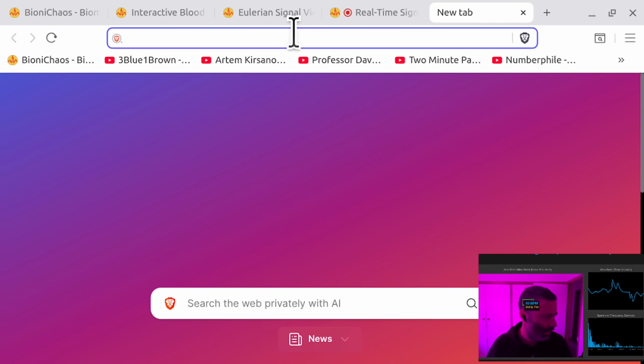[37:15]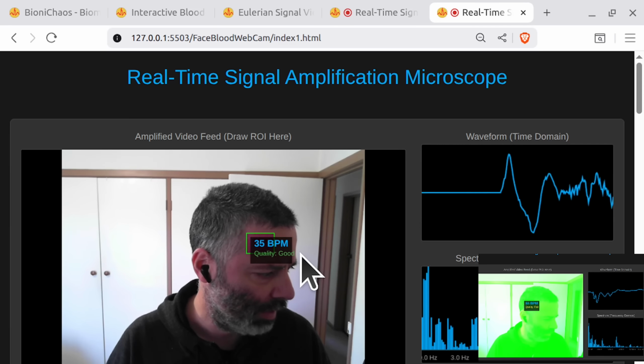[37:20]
We'll have another copy and to index. We don't have proper version control, so I'll do index 1. We have the updated code. Let's see what it does. Can run it in. Okay, so now we have that amplification.
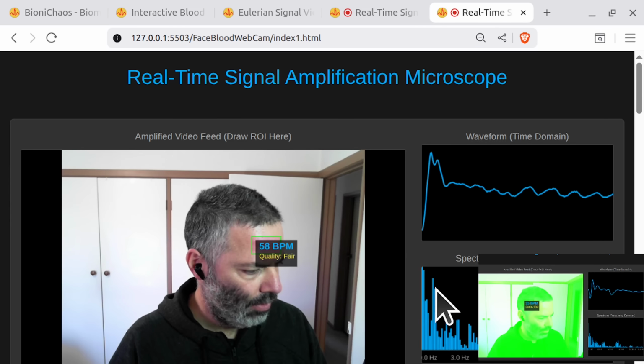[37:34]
Signal quality is good. Let's do more light. Should see a peak over here. Yeah, that peak is the actual BPM. Everything else is rubbish. Yeah, and 70 probably sounds right. 77, it's a bit elevated. Quality good. Now I'm convinced that's the actual heart rate.
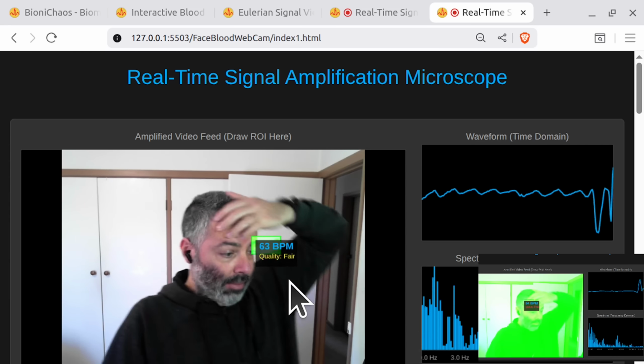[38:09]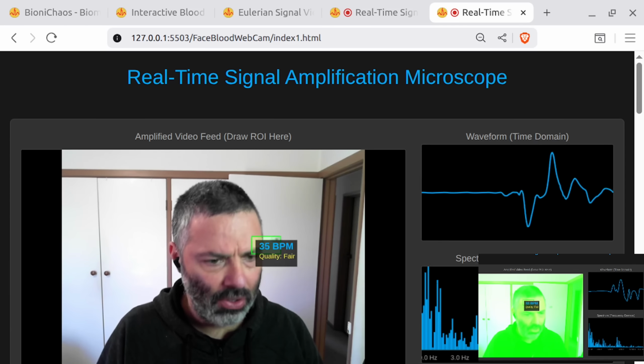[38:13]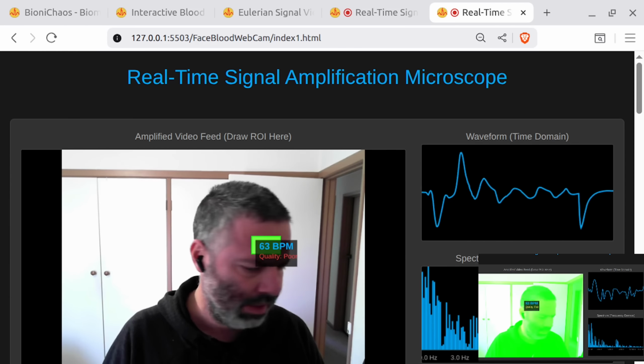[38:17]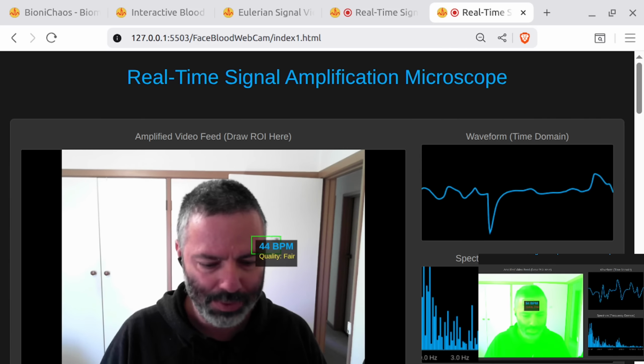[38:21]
Okay, this version is better. Yeah, when you start moving around, obviously, it's losing the plot. Can turn off. That light is in my face. I don't know how other YouTubers have all these lights in the face.
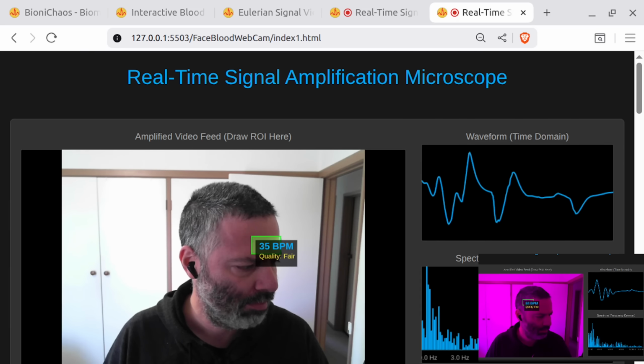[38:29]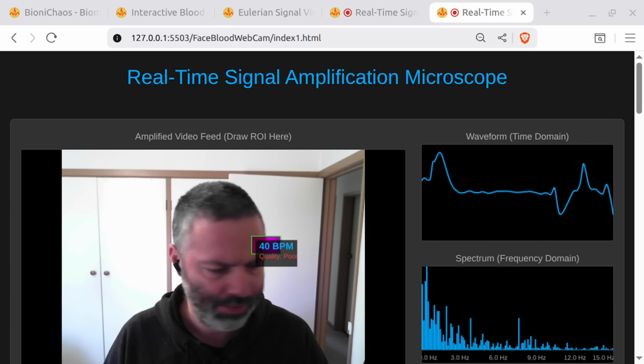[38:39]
Okay, let's actually get rid of the previous version. This one is definitely better because it's not flashing all that stuff. Again, I've been talking for too long again, and if there's any questions in the chat, go for the chat. Happy to talk to a human.
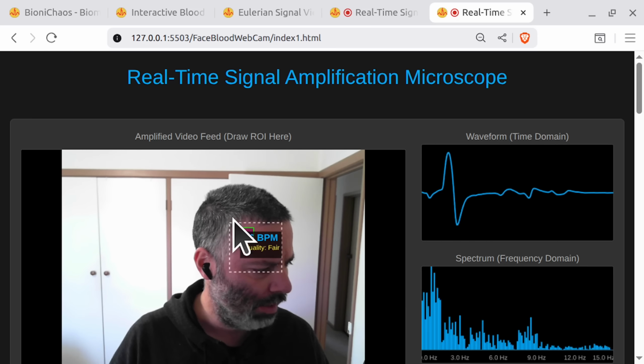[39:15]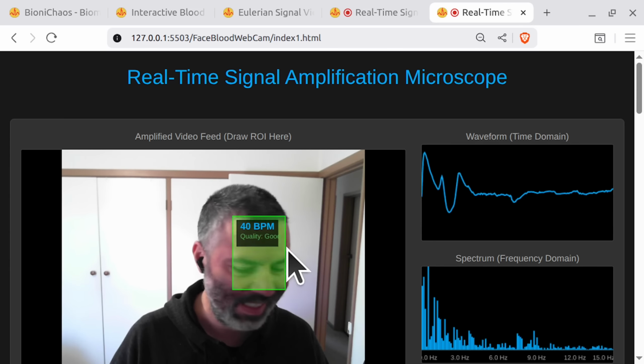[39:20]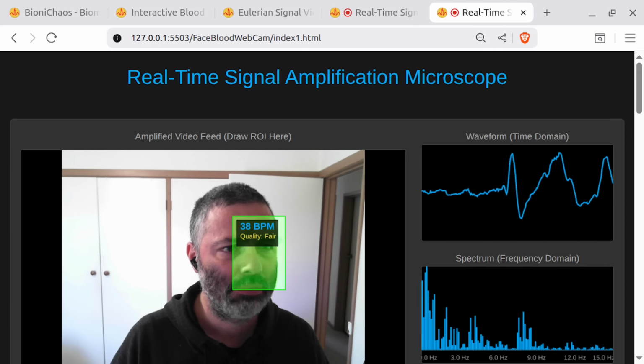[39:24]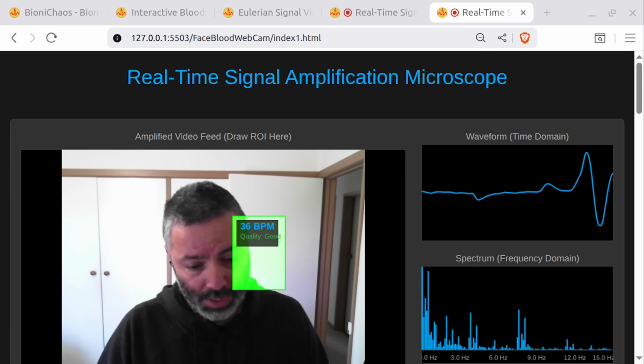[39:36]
So next thing we'll be doing is automated face detection, which we had a version of. MediaPipe will do. There's also another thing that we could use, but essentially it should find the skin on the face. How hard would that be?
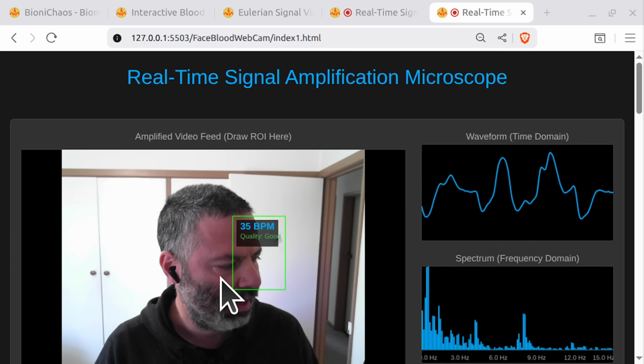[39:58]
But you saw the measurement before. If you don't move and get good light, then we can do the measurement. Okay, so with MediaPipe or any other tool, I don't care which tool we use to actually trace the face, any chance we can mark all the visible skin in the video footage, do it live, fast? We do use WebGL at the moment, don't we? So speed should not be a problem.
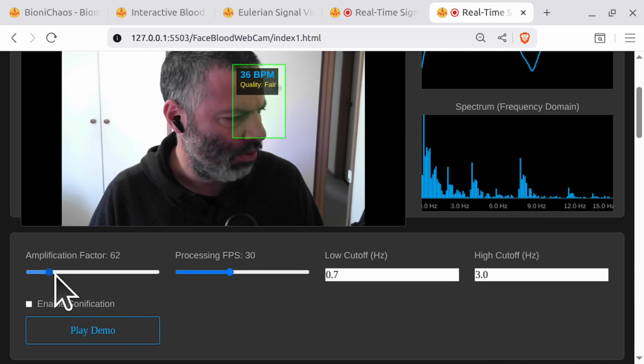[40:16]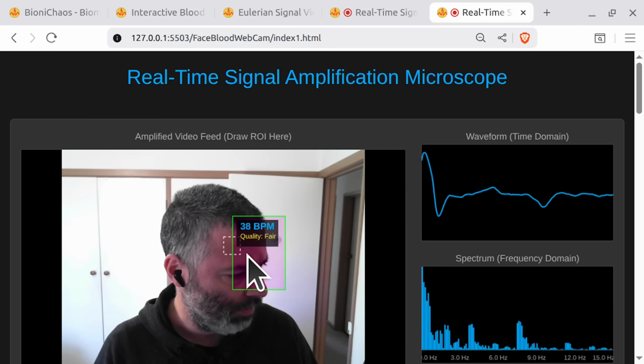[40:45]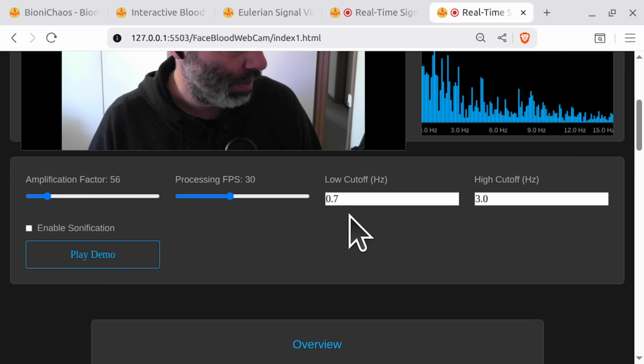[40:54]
Also we need to look at the amplification factor. I think it's too high at the moment. Currently it's going all the way from 0 to 400. Yes, a certain number will supposedly indicate the blood rushing. We keep it 56, make it small. Within this range of between 1 and 3 hertz, we should see a peak.
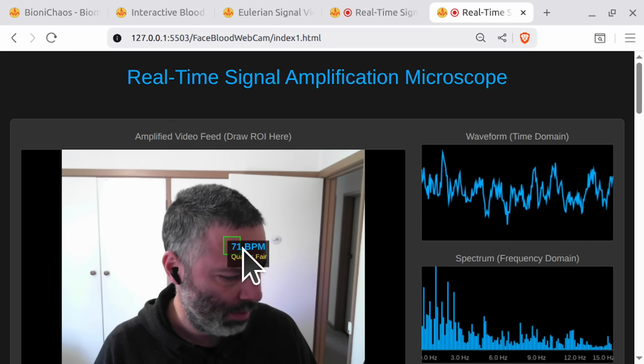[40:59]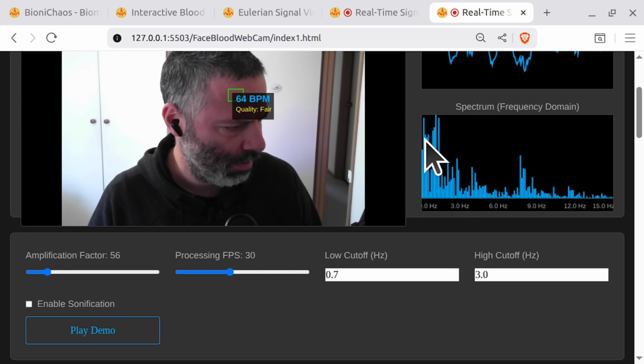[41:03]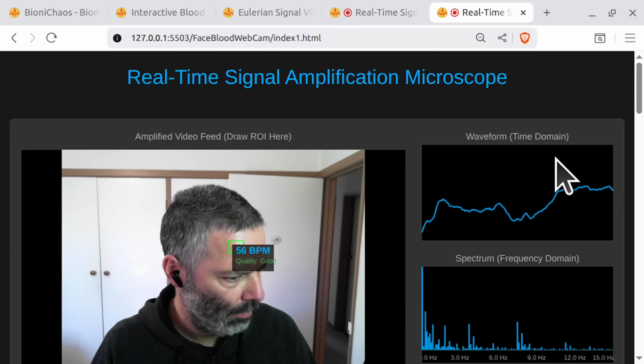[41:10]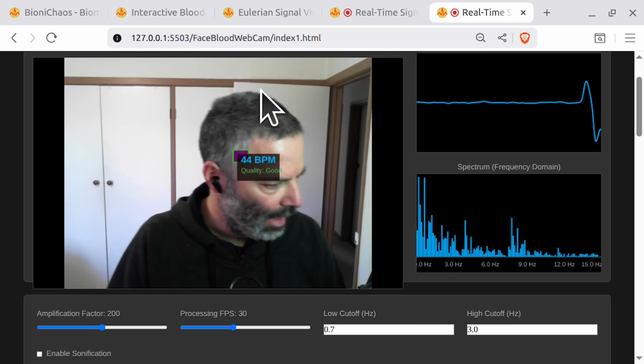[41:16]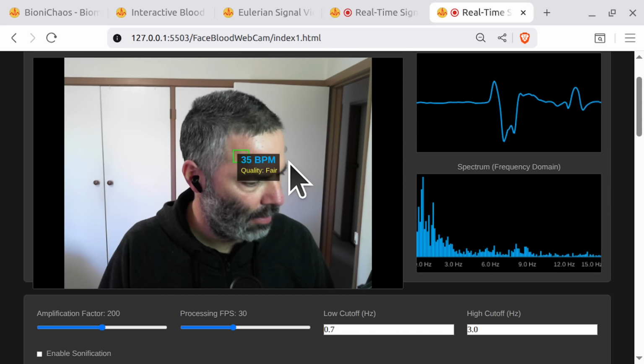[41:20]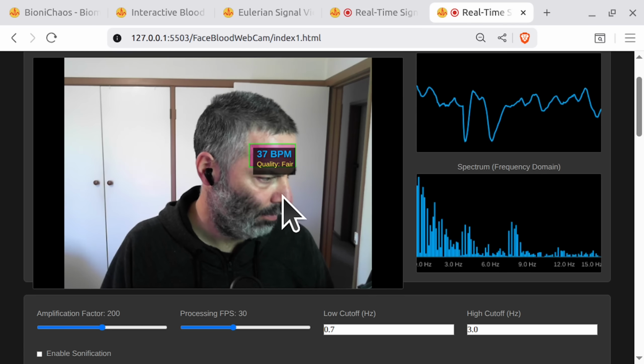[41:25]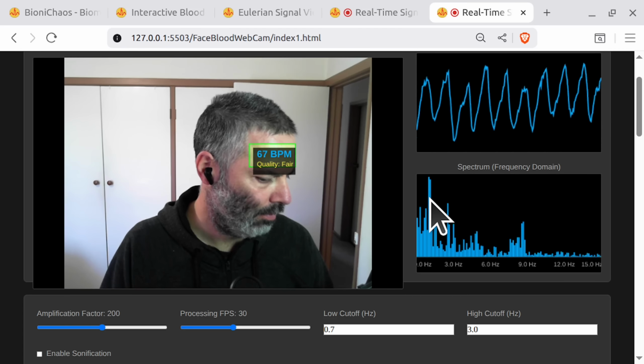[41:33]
Well, it's not there. I don't know what's up with the amplification. There's a peak there. Let's do more light. I want this to stabilize, so I'll just stop talking. I can't get it. Is it because the ROI is too small or something? I'm pretty sure that's my BPM. Having a really nice peak there. So the ROI size makes a difference.
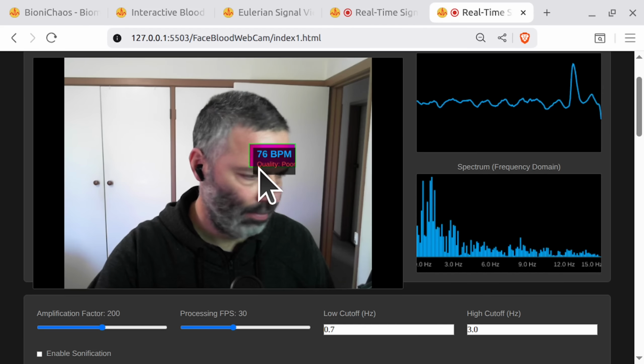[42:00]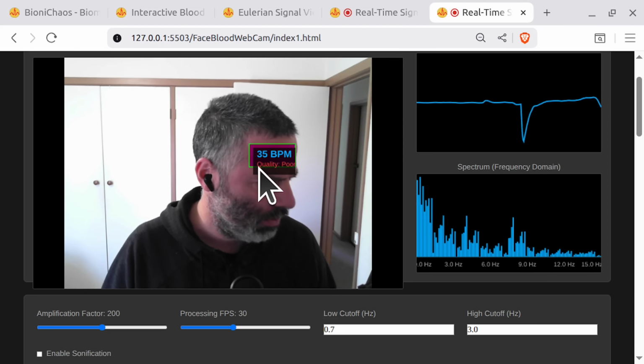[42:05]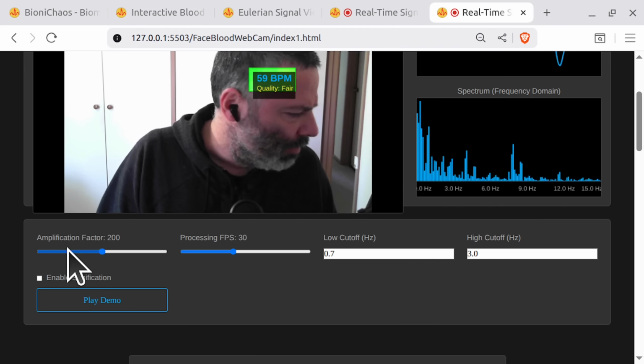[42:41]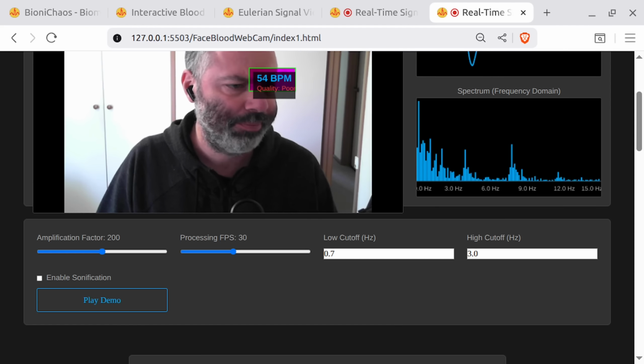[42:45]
Can we get it with no extra light? So interestingly enough, it can be used to detect AI generated people. No, it's harder with no light. I'm not sure about the amplification factor. And what did we ask?
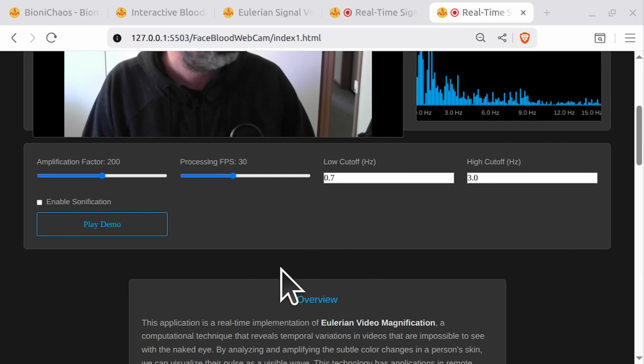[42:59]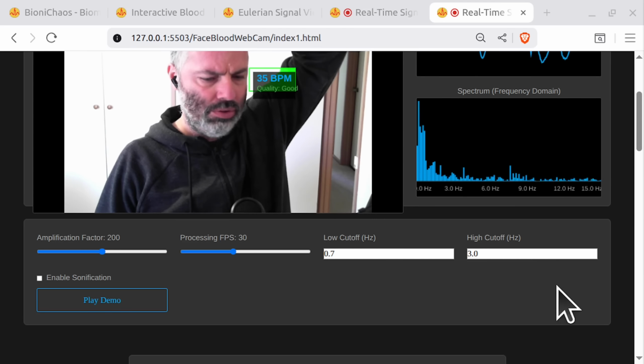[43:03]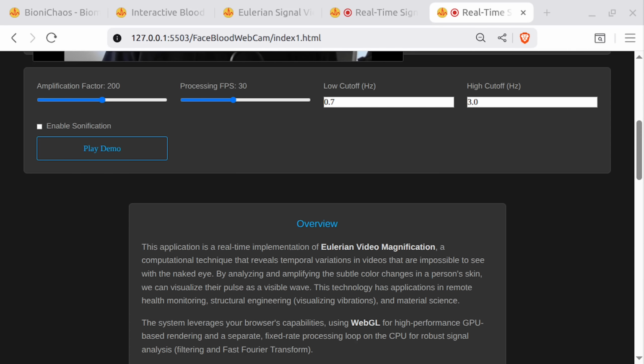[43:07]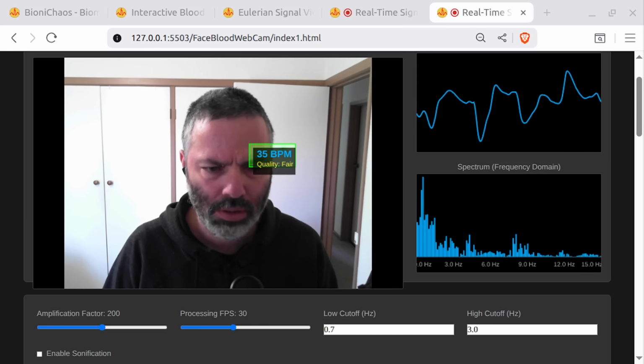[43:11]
I will integrate Google's MediaPipe Face Mesh. Integrate Face Mesh. Will it work? Well, that's one way to find out: just test the code. I'm not gonna read the code. Sometimes when you copy to clipboard, it doesn't even copy the entire code.
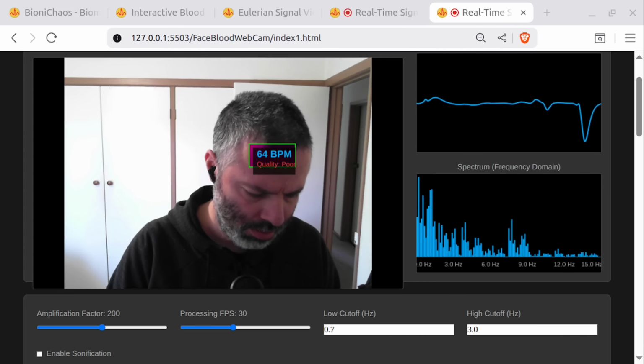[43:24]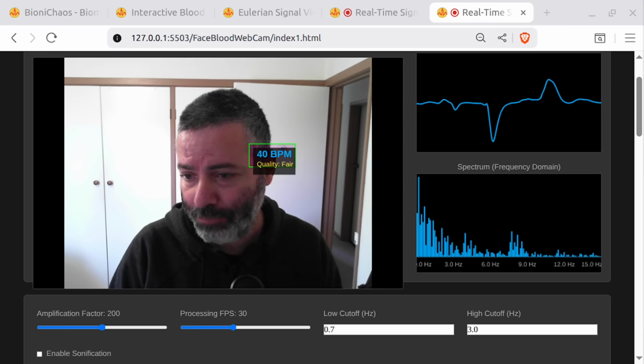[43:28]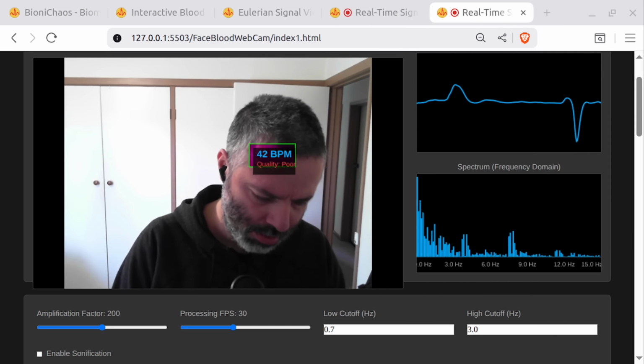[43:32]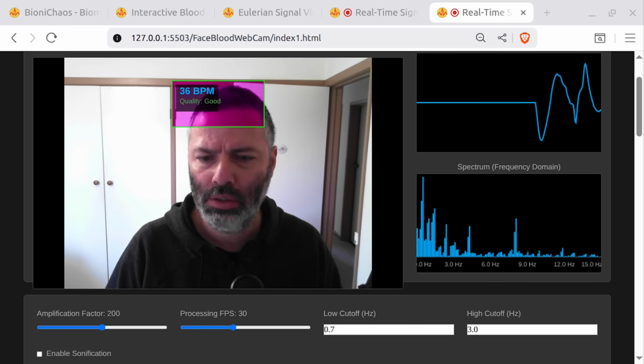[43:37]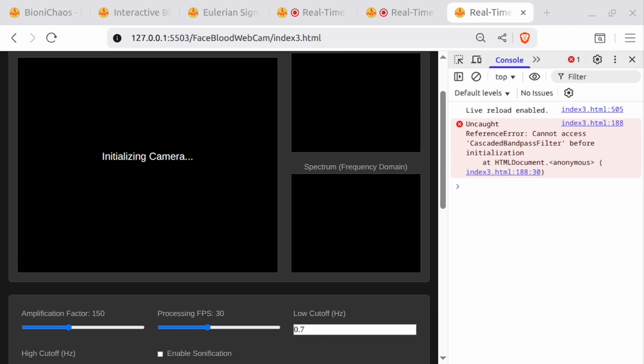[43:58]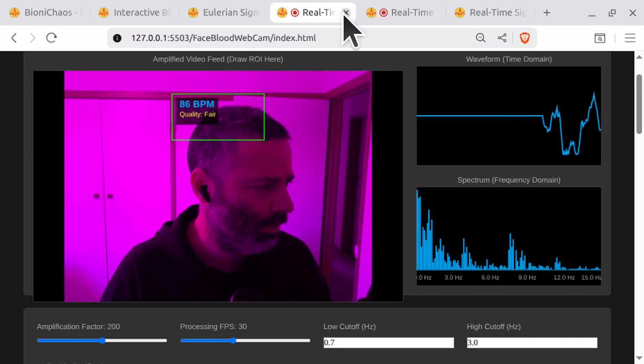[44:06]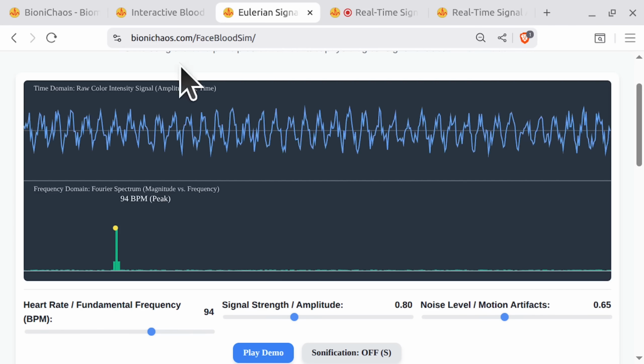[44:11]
So this is like the whatever 20 version, but a third. It's the formal number. And how is it much shorter? Does it just do the MediaPipe stuff? Can we make sure all the previous functionality is there? So don't remove any current functionality. We don't like this one. This one will go.
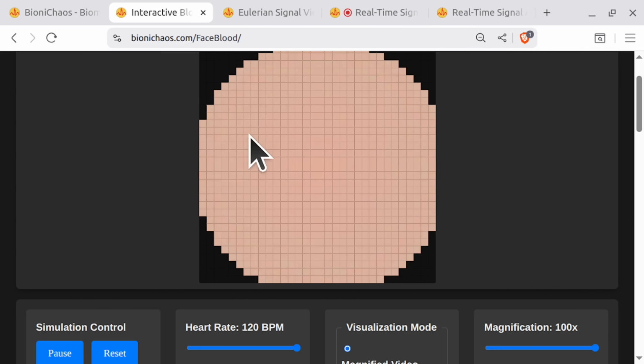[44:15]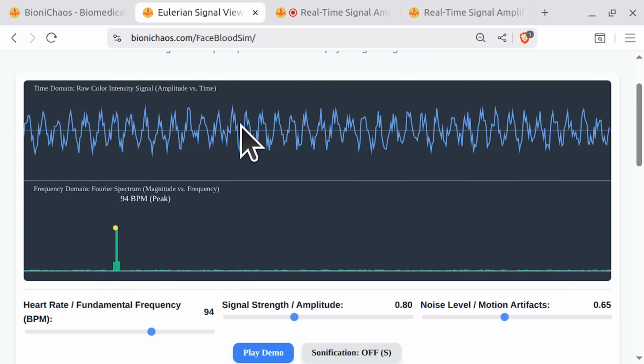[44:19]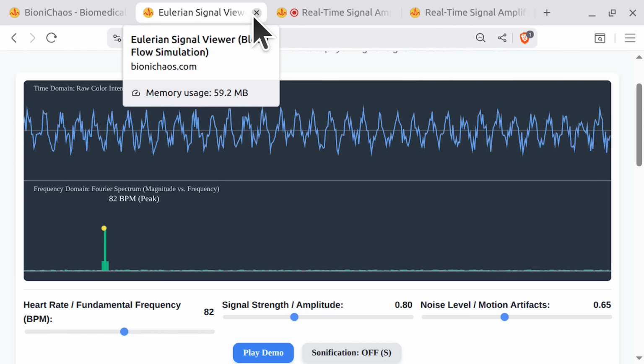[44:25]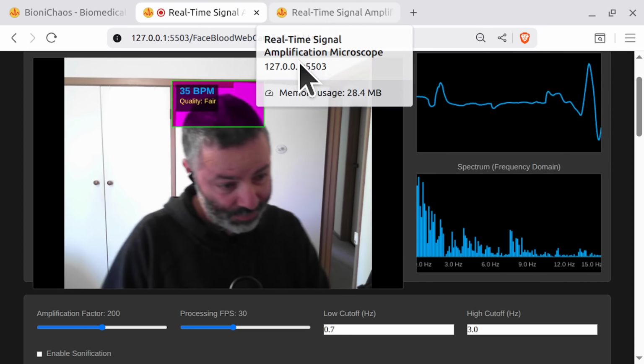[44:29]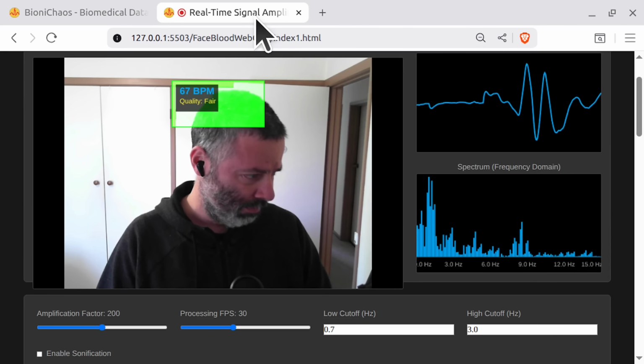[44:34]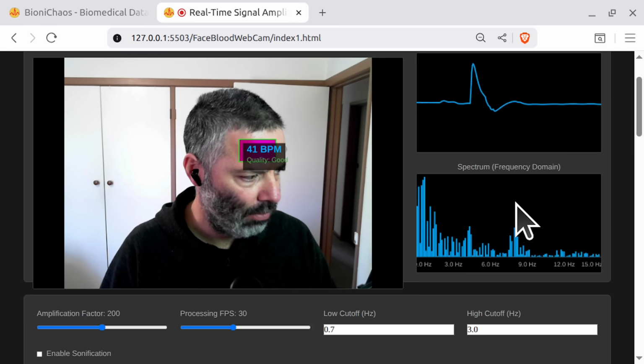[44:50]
Anyway, we have the theory behind it. This is a synthetic patch of the skin. This is how we actually calculate the beats per minute out of the color fluctuation on the face. And this is the actual thing up and running. And you saw before, if we have a large enough ROI, if we have good light, and I don't move, we get a good quality heart rate. Very nice.
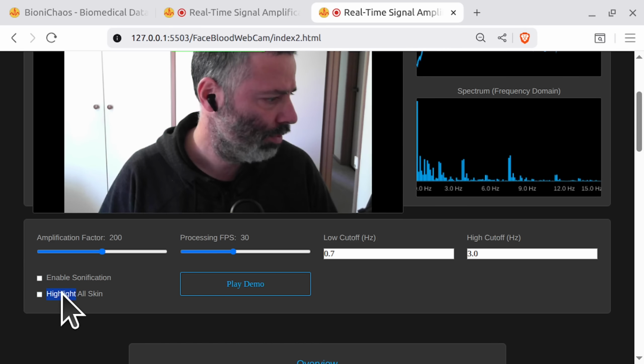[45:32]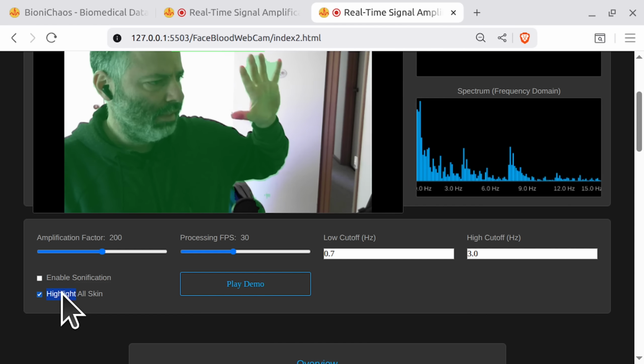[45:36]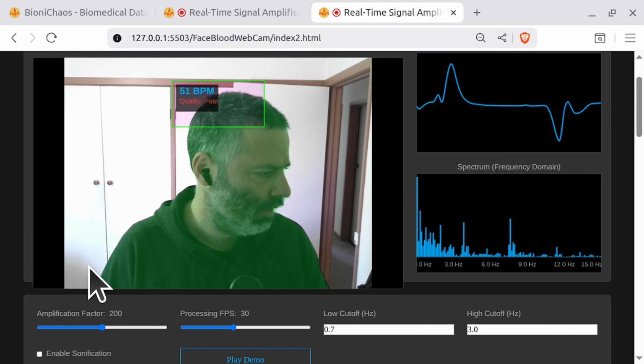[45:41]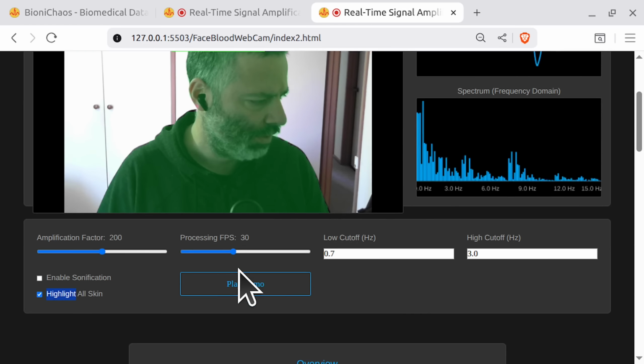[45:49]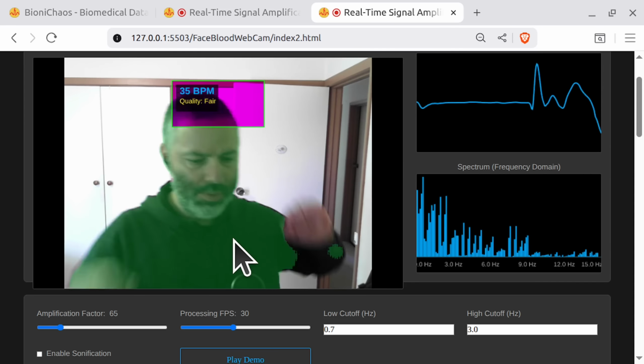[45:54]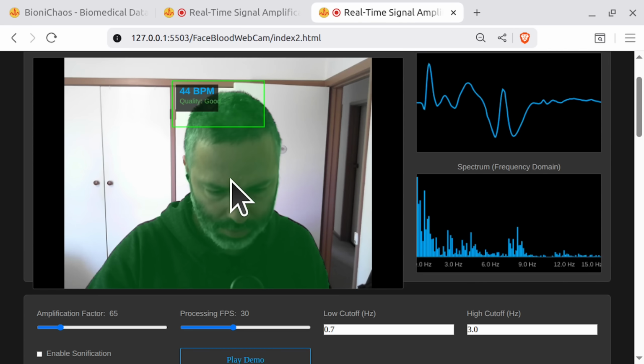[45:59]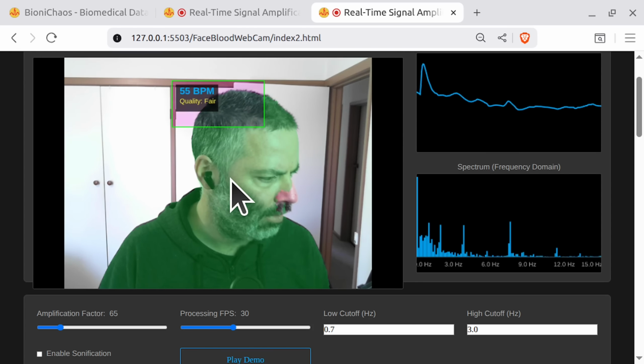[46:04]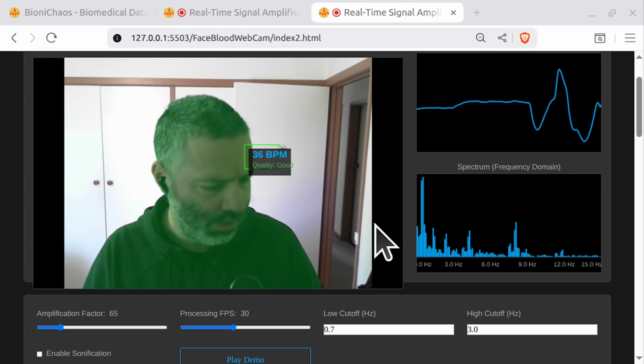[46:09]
Highlighting all skin. No, it's highlighting me. It's highlighting the skin. Highlight all skin. Okay, but that's not skin, is it? Recognize clothing? No. So it's highlighting me, which is nice. It's not recognizing clothing. It's assuming I'm naked. And then it's not actually using it. No, it's still using the ROI. So it's not clear at the moment.
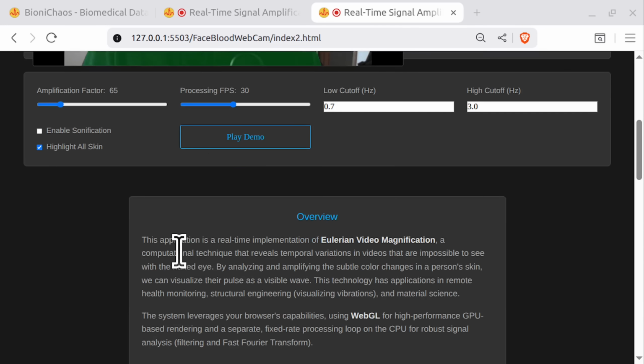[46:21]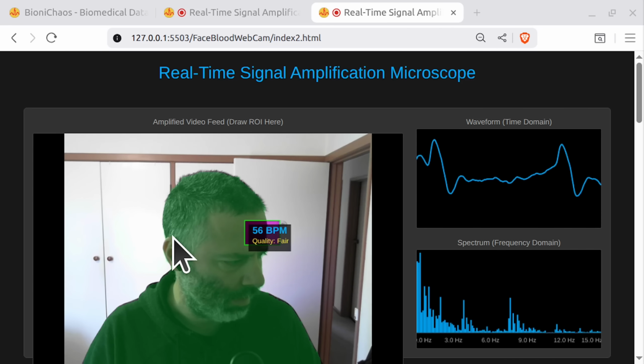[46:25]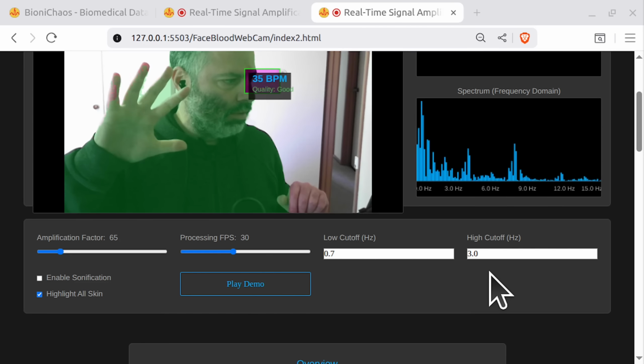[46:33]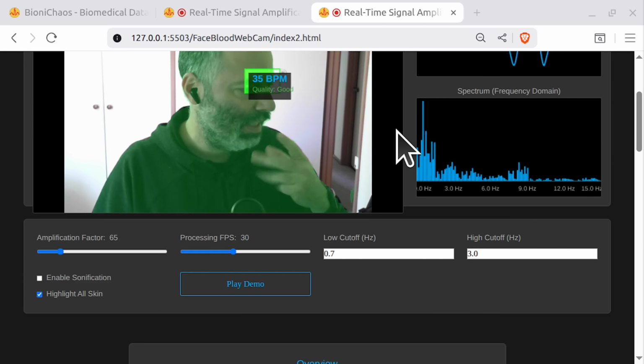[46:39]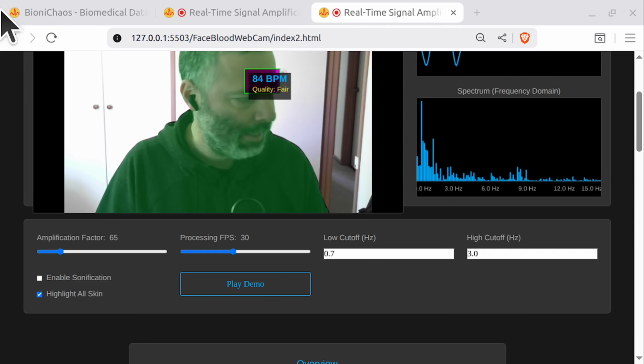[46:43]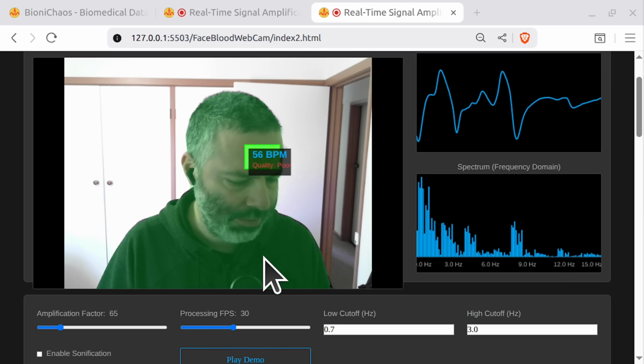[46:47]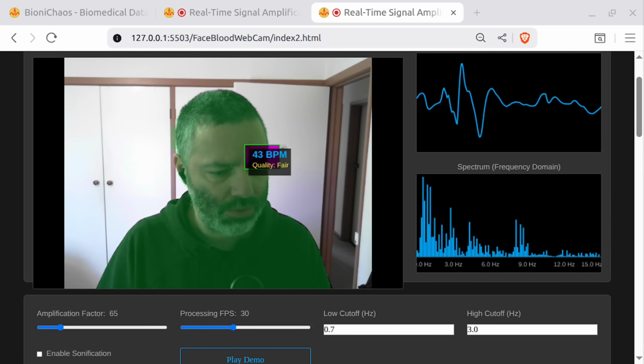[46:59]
Is it using the manual ROI, region of interest, that I mark for the detection, or is it using the skin detector? I think it's using the ROI box. Can you confirm what's going on? It's kind of okay. Ideally it will deselect the jumper, just find the face, and ignore the hair and the beard, but not sure if it can do it. It's happening now.
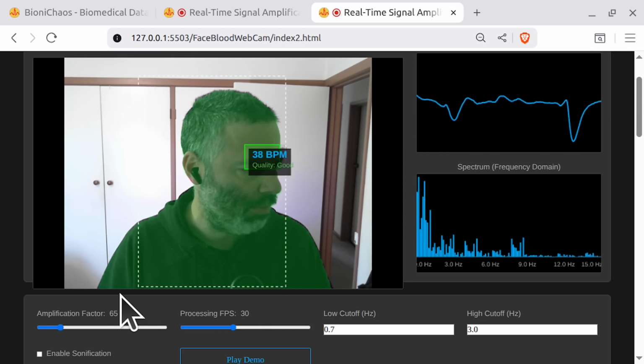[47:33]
Pulse calculation, the heart rate is calculated exclusively from the pixels inside the manual green ROI box. The solution unifying the visuals: to eliminate this confusion, we'll change the logic so that the green skin highlight is also confined to the ROI box, to create a clear, intuitive analysis area inside the box you draw. Oh, right. So you will draw a box like this, and inside it will find the... Is that what it's doing at the moment?
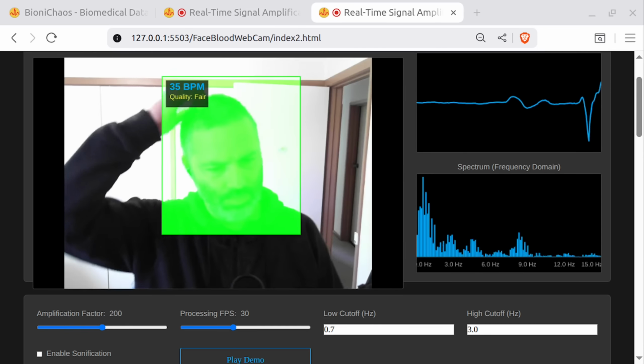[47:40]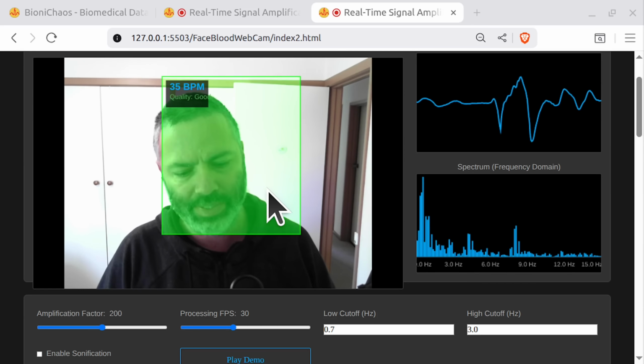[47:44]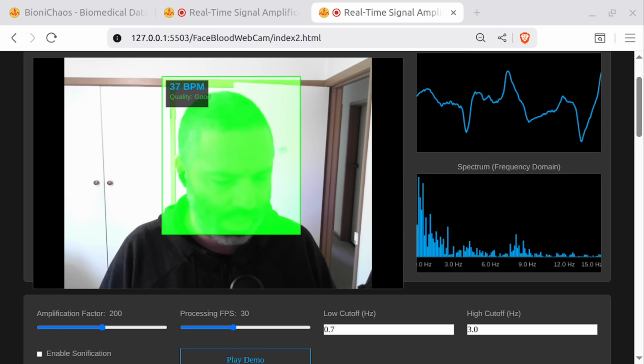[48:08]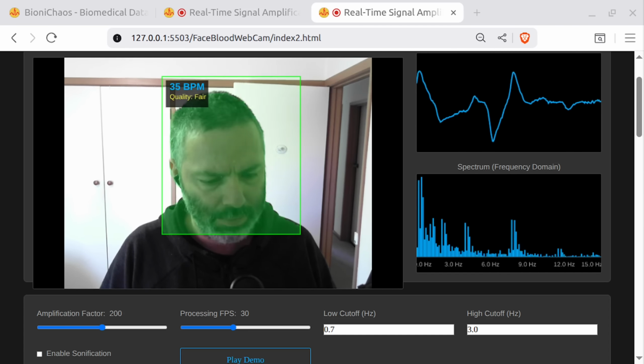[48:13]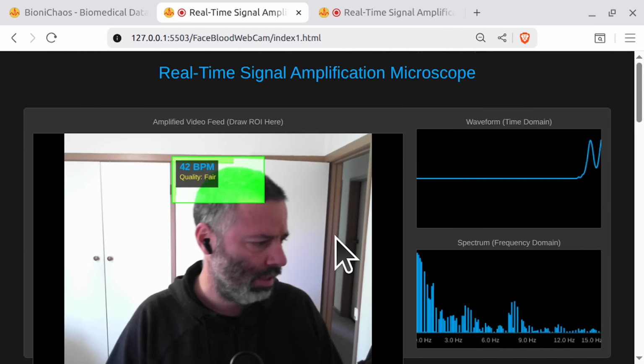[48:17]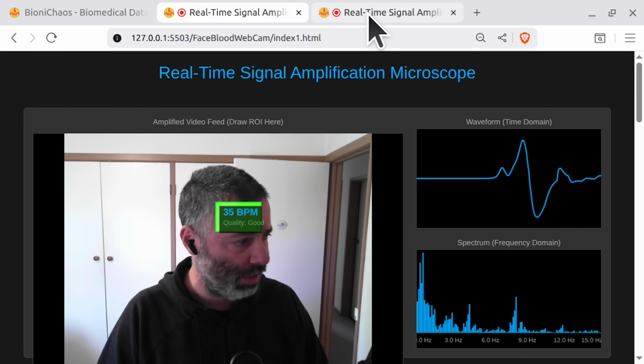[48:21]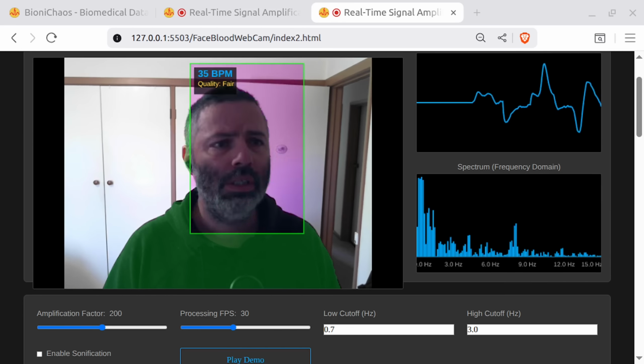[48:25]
No. Can we leave all the current functionality and have an option for either selecting a manual ROI or having an automated ROI selection, which will try and find all your skin, but will ignore clothing, hair, beard? So we'll just essentially find the forehead and areas under the eyes and nose. Is that possible? Can we also make sure all the current functionality is still there, so don't remove anything? We expect the code to be longer. The previous version was manual ROI selection, and we saw it did work. Let's give the code to another board.
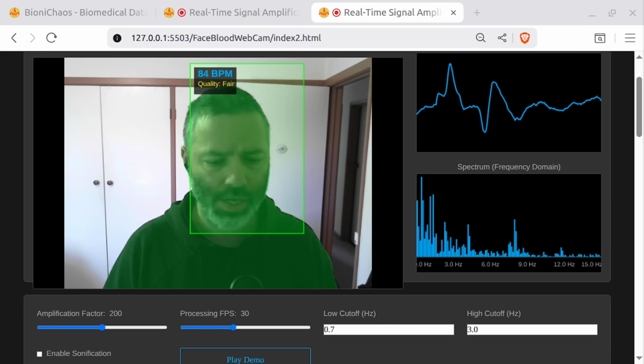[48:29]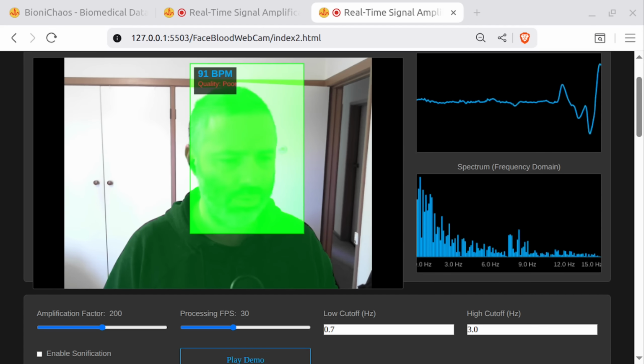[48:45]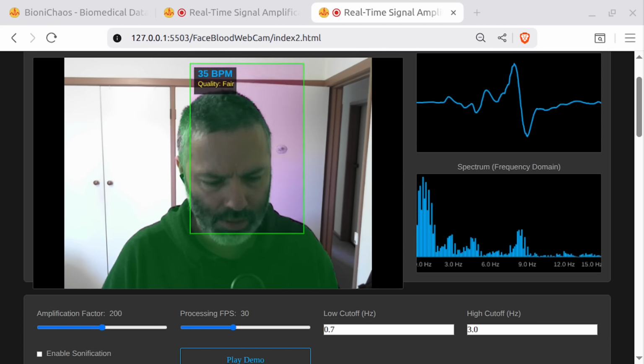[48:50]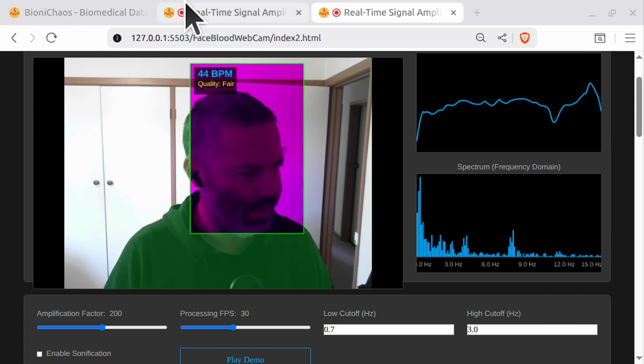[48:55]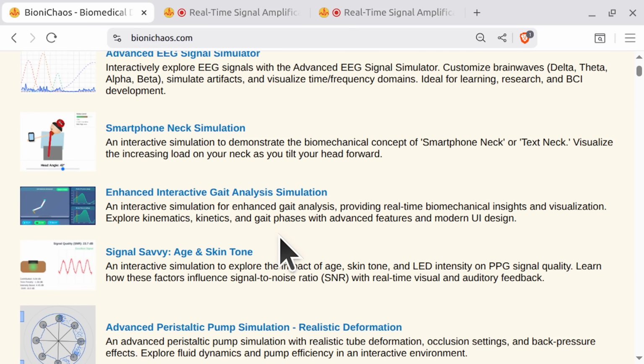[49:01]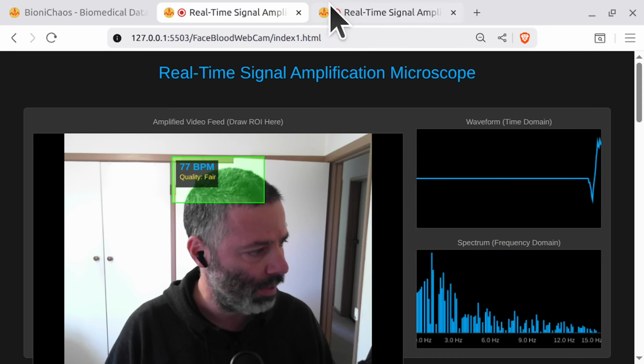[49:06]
We will generate a standalone digital conversation between a data scientist and a comedian, about this project, the code, what we're trying to do. Yeah, that sounds good because I've been talking for too long and there is no human on the other end. If you do have questions, pop them in the chat. Happy to take any questions. Otherwise, everything we do is available on BioniChaos.com. Go check out the website and again, provide your feedback.
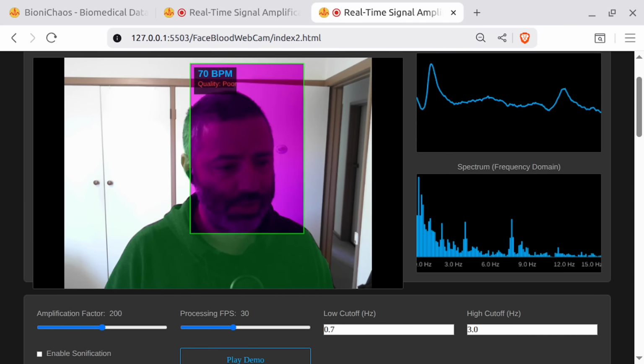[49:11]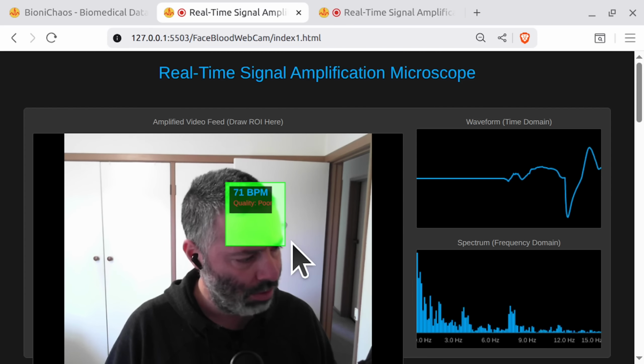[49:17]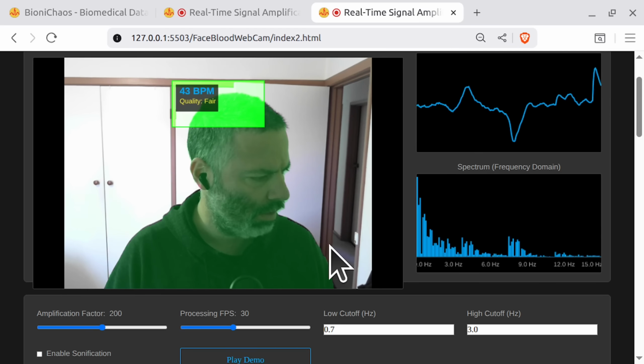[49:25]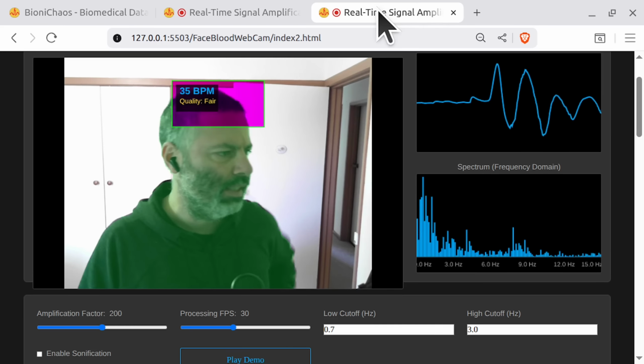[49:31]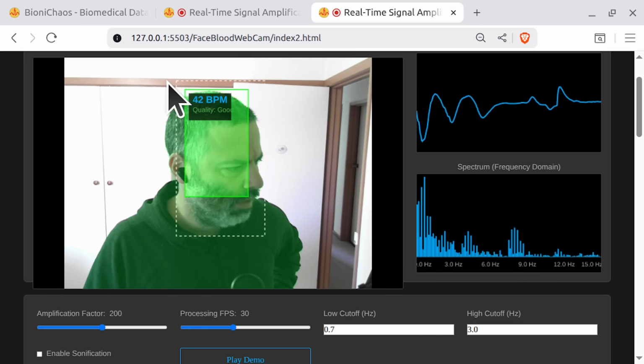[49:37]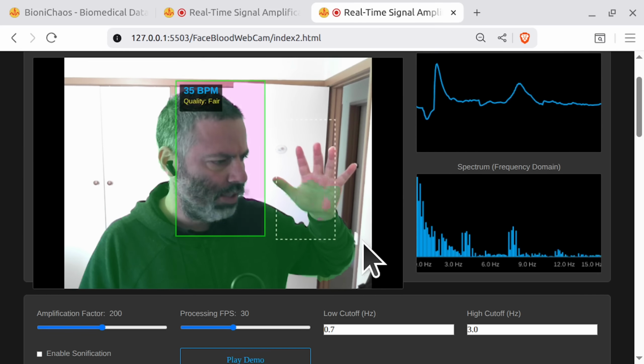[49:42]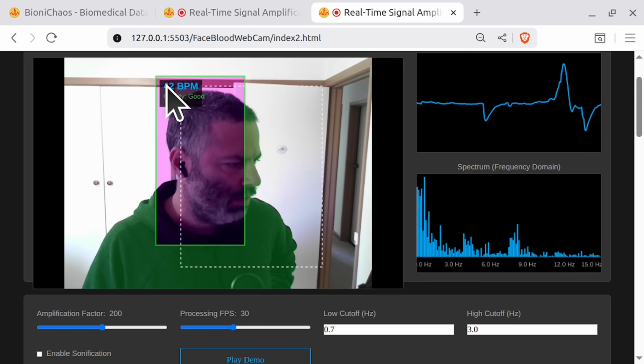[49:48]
So we have Gemini 2.5 Pro generating our version of the code. All we're trying to do is have this version have both a manual region of interest and an automated one. So in this case, it's actually trying real hard to find the skin. How much will we use? It's only 83 megabytes in the browser, so it should work pretty much anywhere. It's doing an okay job. Maybe, maybe not.
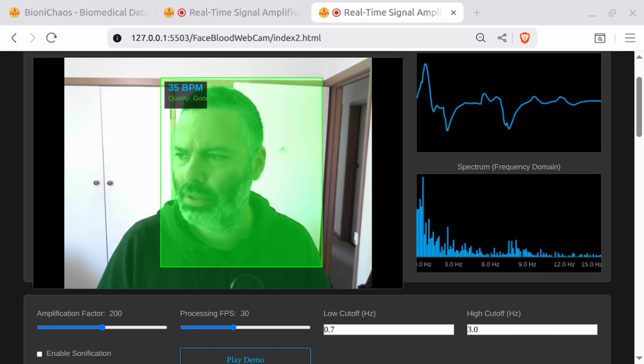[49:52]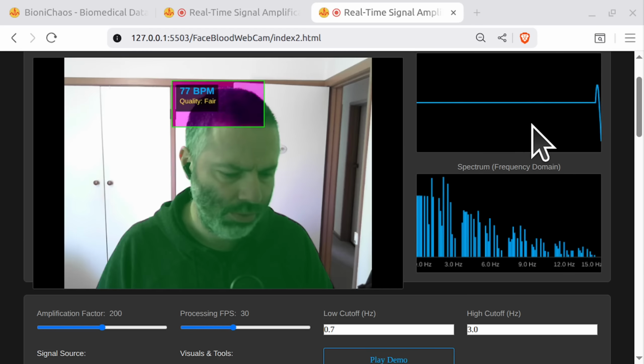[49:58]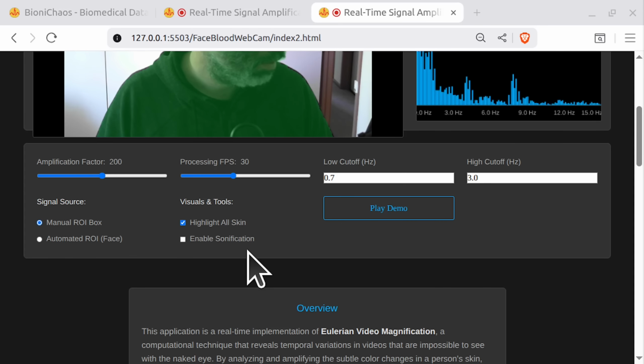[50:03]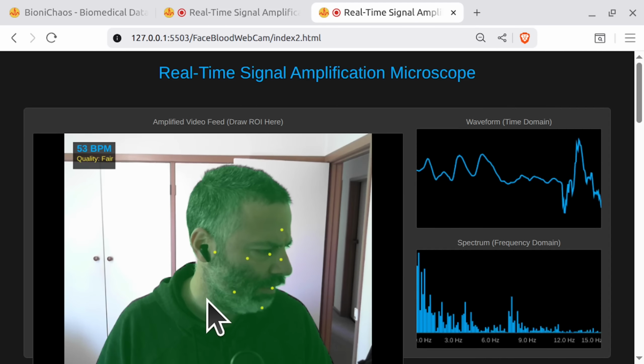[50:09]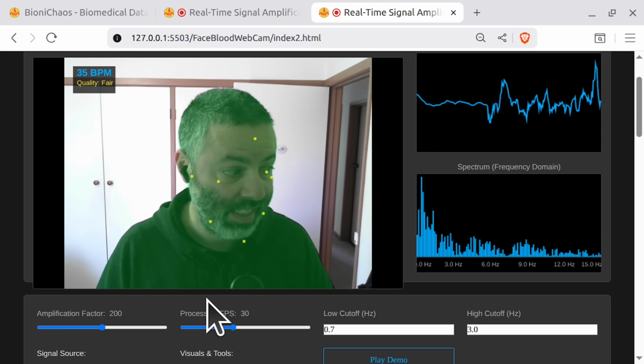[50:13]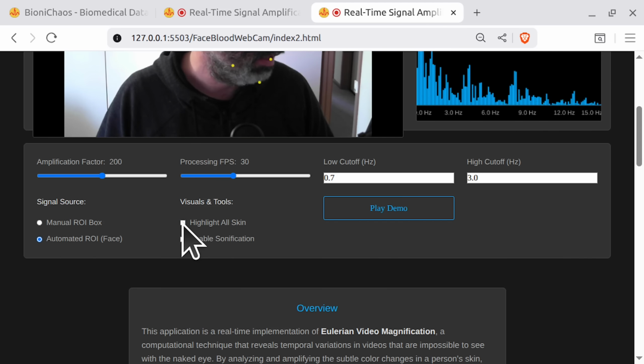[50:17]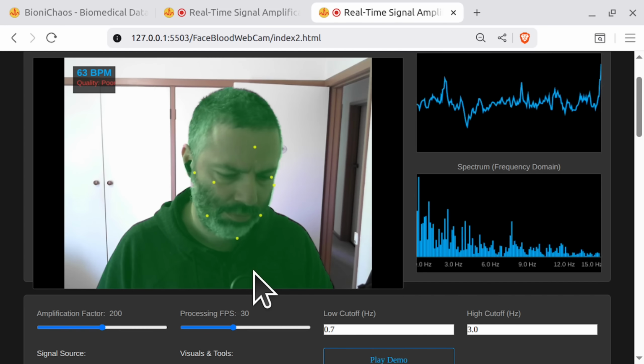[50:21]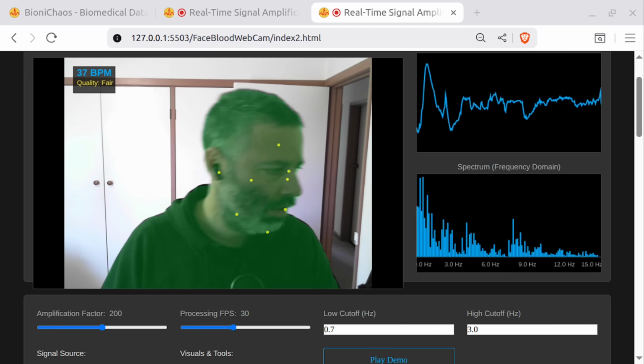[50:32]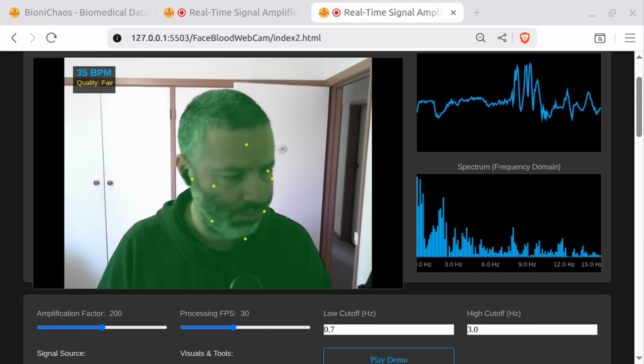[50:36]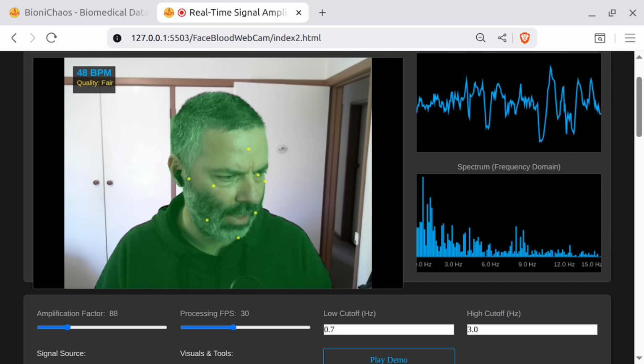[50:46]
We have a script. I don't know why, it seems much shorter. Highlight all skin, enable amplification, manual ROI, automated ROI face. Okay, so we're finding the face. Highlight all skin. Okay, so what is it doing? Is it working? We will generate a conversation, NotebookLM. Skin. That's only doing the face, no hands. So if I don't move, quality is poor. Do we need more light? Not sure light helps. We'll keep testing this.
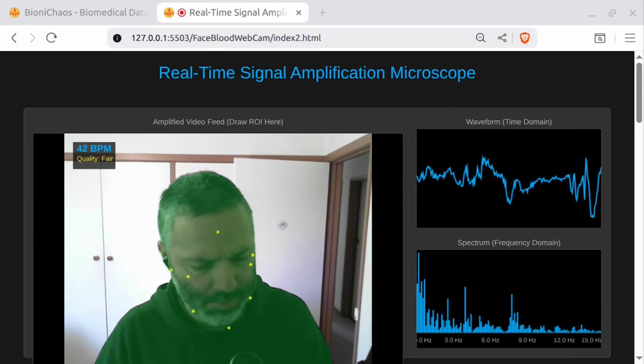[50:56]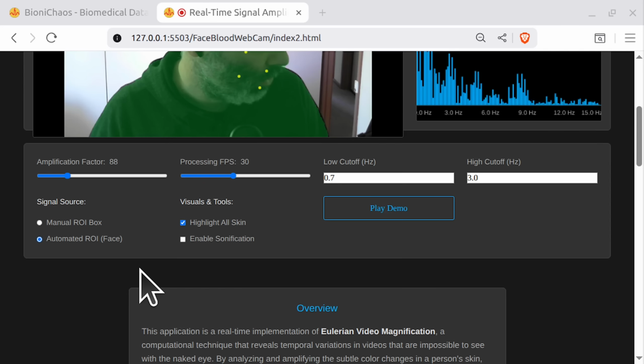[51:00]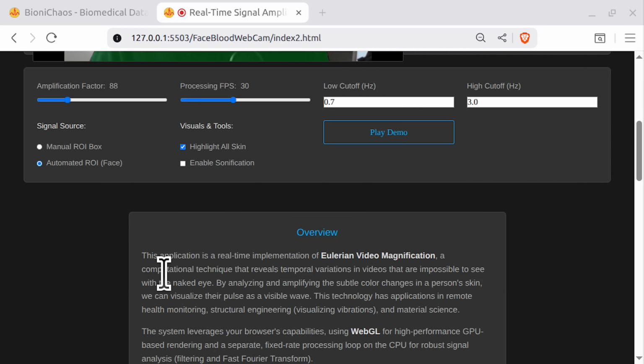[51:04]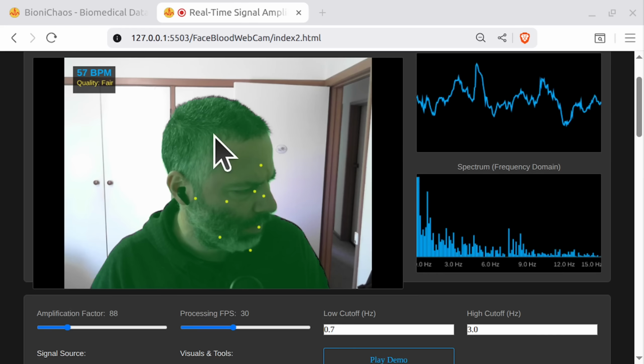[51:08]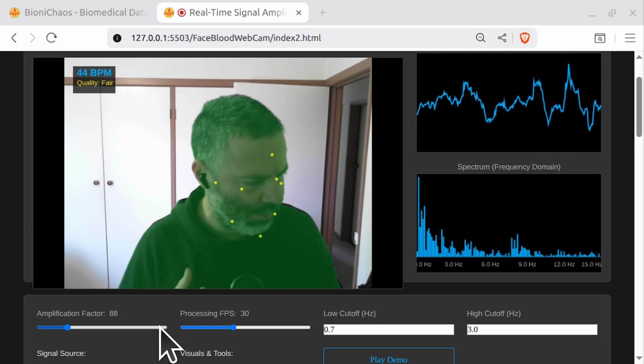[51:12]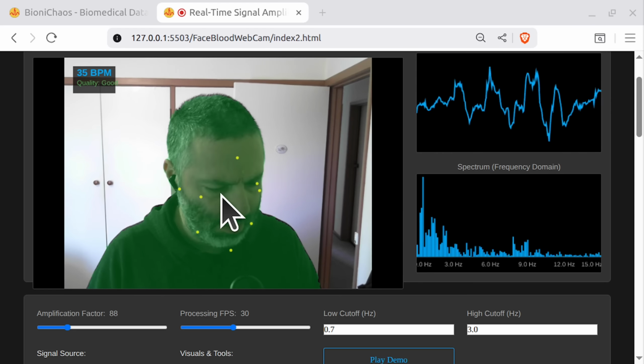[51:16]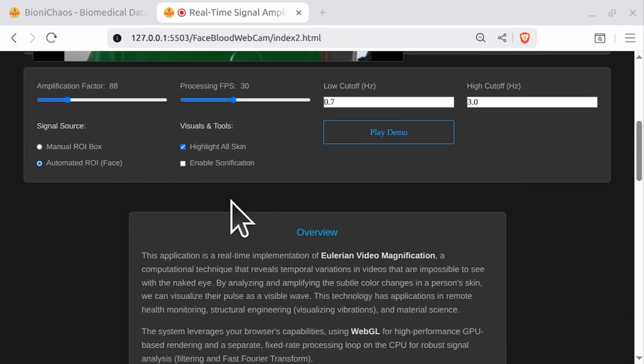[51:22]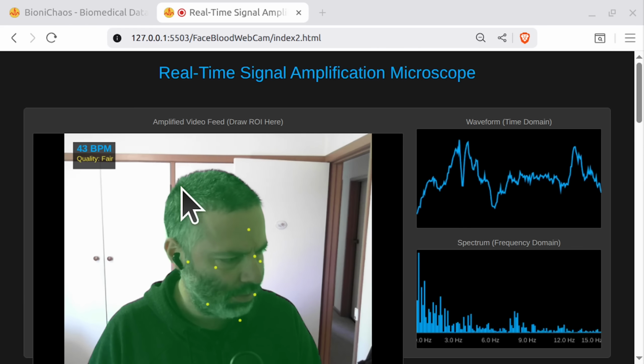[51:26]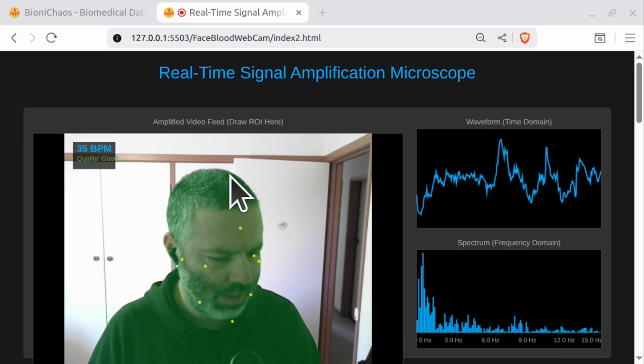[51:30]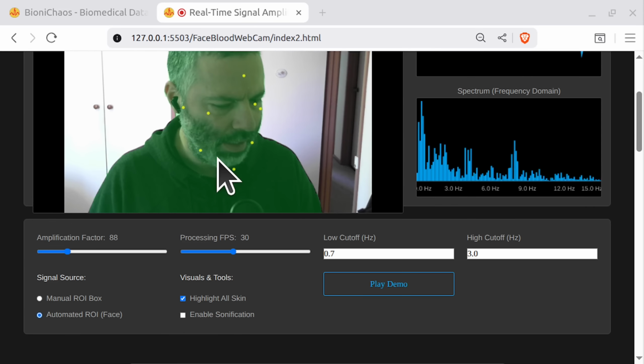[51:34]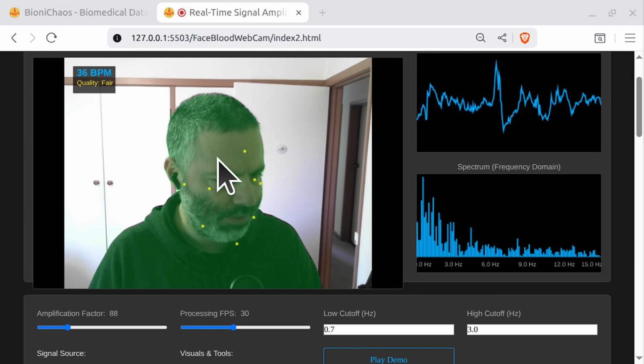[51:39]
So can we just confirm, when we have the automated ROI phase, we have the highlight all skin. Is all the highlighted skin taken, because it's highlighting hair and jumper, clothing and everything. It's not just highlighting the skin. That could be an issue, isn't it? Can you explain how the automated ROI actually works? What happens if we don't just have skin as a region of interest? It might be a problem, doesn't it?
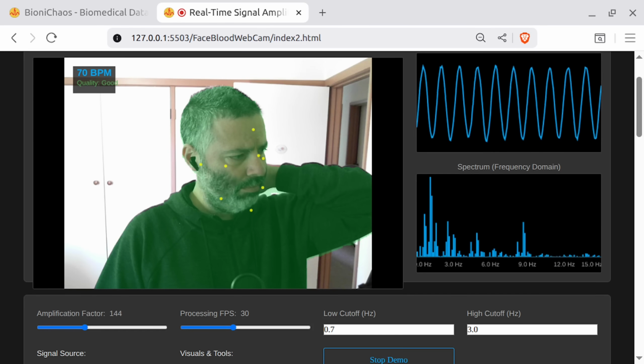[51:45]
Okay, the play demo is actually faking it. It's pausing the video footage, showing quality good, changing the amplification factor and stuff. So yeah, that's just fake, which is really good for streams because I can go have my lunch or something.
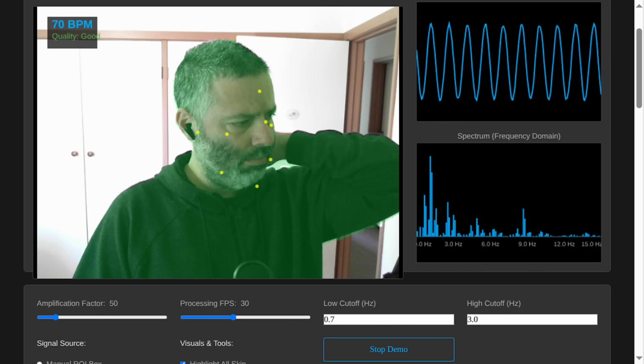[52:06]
So, what do you think? My forehead is practically strobing to the beat of my own heart. I think you've finally done it. You've invented a way to tell if someone is lying just by looking at their face disco. My forehead is currently flashing like a faulty neon sign that says mildly anxious.
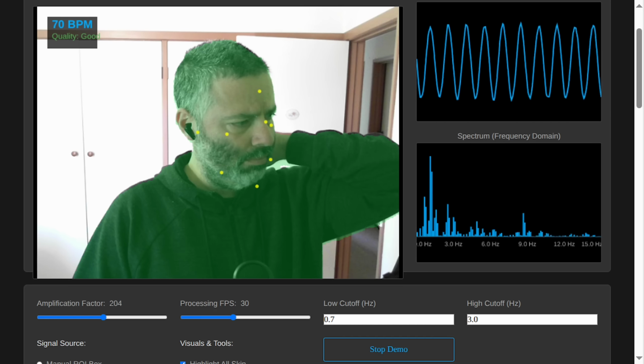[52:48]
It's not anxiety, it's just hemodynamics. We're running a real-time Eulerian Video Magnification pipeline. We take the video feed, isolate a signal, and amplify it back onto the image. You say hemodynamics, I say living mood ring. You know the code is working when your face turns the color of guacamole every 0.8 seconds. So break it down for me. Why green? Do you have a thing against the other primary colors?
It's because hemoglobin, the protein in your blood that carries oxygen, absorbs green light. So when your heart pumps blood into your face, the capillaries flush, absorb more green light, and reflect less of it. The camera sees a tiny dip in the green channel. We just grab that dip and turn it into a tidal wave. So my face is a radio station, and you're not listening to the music, you're listening to the silence between the songs. And you've turned the volume on the silence up to 11. That's a surprisingly accurate analogy.
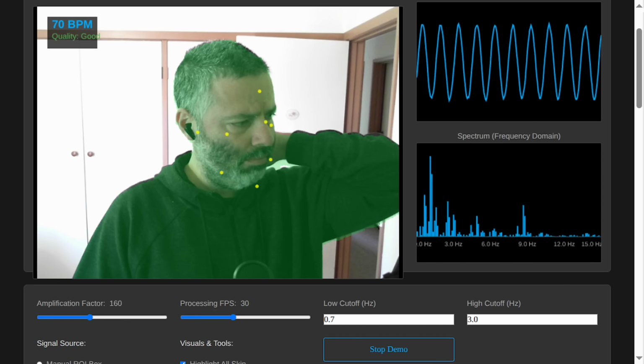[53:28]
The raw signal is incredibly noisy. That's where the code gets fun. First, we detrend it to remove slow changes, like if the sun comes out from behind a cloud.
Detrending? Is that what happens when you finally stop wearing skinny jeans? Something like that. Then we run it through a digital bandpass filter. We tell it we only care about frequencies between, say, 0.7 and 3 hertz. That's the typical range for a human heart rate, from 42 to 180 beats per minute. Everything else, camera noise, flicker from lights, your head moving, gets thrown out.
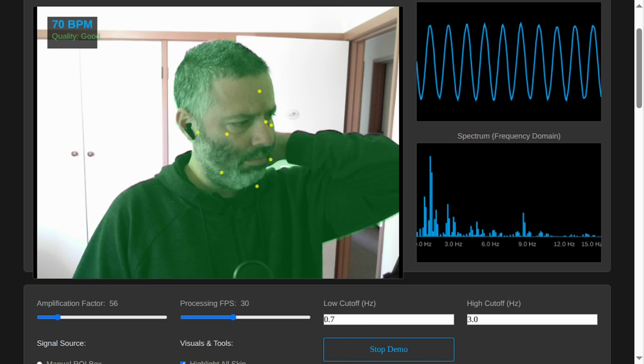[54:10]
It's a bouncer for data. Sorry, Mr. Jittery Head Movement, you're not on the list tonight. Only you, Mr. Rhythmic Pulse, can come in.
Precisely. After that, we apply a fast Fourier transform. Oh, here we go. You've summoned the incantation. Does a math ghost appear when you say that? It basically turns the squiggly line of the pulse over time into a bar chart of its component frequencies. The tallest bar is the dominant frequency, your heart rate. We just find that peak, do a little math, and bam, beats per minute.
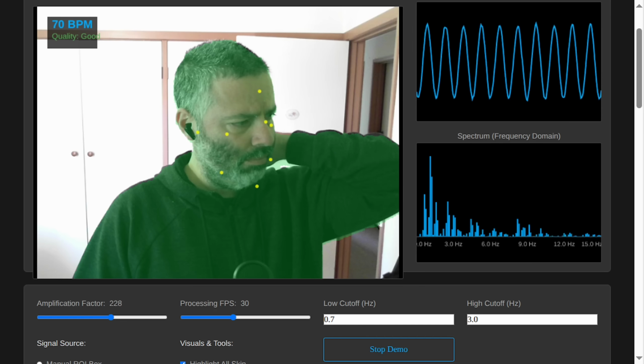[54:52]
And what's this signal quality thing? Is that the computer judging my life choices? Mine currently says fair, which is what my teachers used to say about my attitude. It's measuring how peaky that peak is. Is it a sharp, undeniable Matterhorn or just a gentle hill in a range of other noisy hills? Excellent means the signal is crystal clear. Poor means you're probably moving too much and the signal is garbage. So when it says poor, it's politely telling me to stop having emotions and to become a statue.
Understood. Now, about this box. At first, I had to draw a little green prison on my own forehead. Stay in the box, Pulse. Don't you wander. That was the manual ROI mode. It works, but it's clumsy. If you move your head, you leave your ROI behind. The real magic is the new automated mode.
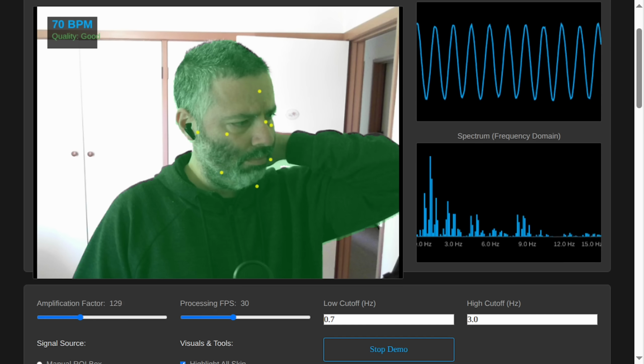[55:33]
Ah, yes, the yellow dots. My face is now being gently acupunctured by a benevolent AI. It's slightly more dystopian, but definitely less effort. How does it know where to put the pins? That's MediaPipe Face Mesh. It finds 468 landmarks on the face in real time. We picked a handful of them on the forehead, the cheeks, places with good blood flow that usually aren't covered by beards or glasses. The code then averages the signal from all those points. It's much more robust against small movements.
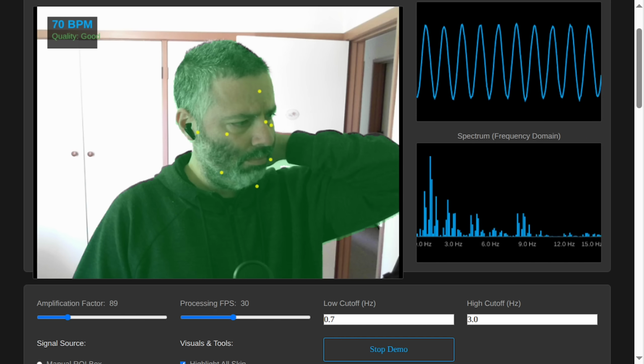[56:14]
So it's crowdsourcing my own pulse from different parts of my face? My forehead and my cheeks are having a little committee meeting to decide how fast my heart is beating. Exactly. And notice the intense amplification effect is only visible inside the manual box. We didn't want the auto mode to make your whole face throb. That would be unsettling. Your word is unsettling.
Mine is hilarious. So what's the grand plan? Are you going to sell this to teenagers so they can see their pulse spike when their crush walks by? Telehealth primarily. Imagine a doctor getting a patient's heart rate from a simple video call, or monitoring a baby in a NICU without attaching wires.
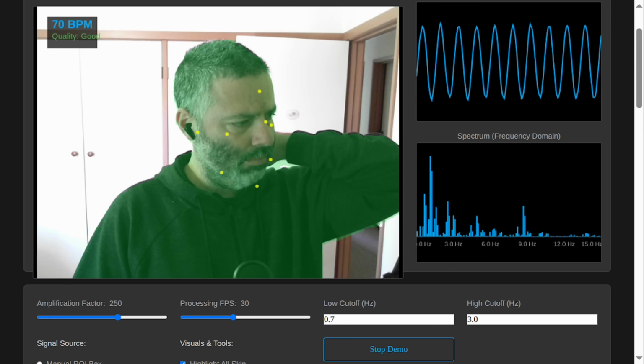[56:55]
We could even point it at structures, a bridge, a building wing, and amplify its tiny, tiny vibrations to see if it's structurally sound. You're going to point this at a bridge and see if it's having a panic attack? That's brilliant. Doc, the Golden Gate is looking a bit stressed. Its BPM is way up. It's all just data hidden in plain sight. We're just building the glasses to see it.
Well, my glasses say my signal quality has just dropped to poor. I think that's the code's way of saying it's tired of hearing me talk.
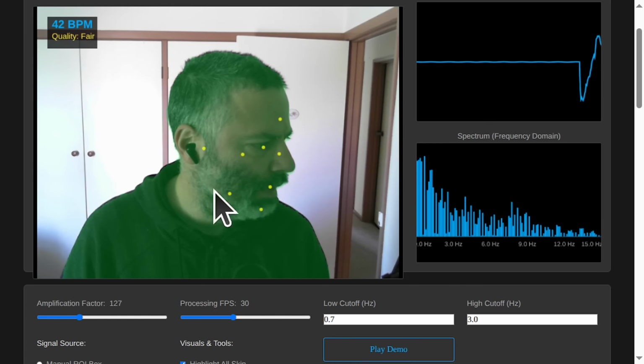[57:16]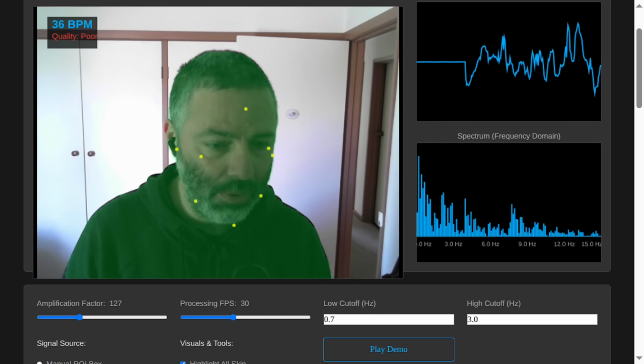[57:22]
Okay, and there's a human in the loop. We can stop this demo. The demo is quite good. Yeah, there's quite a few problems with the tool itself, which we have a very experienced developer trying to fix.
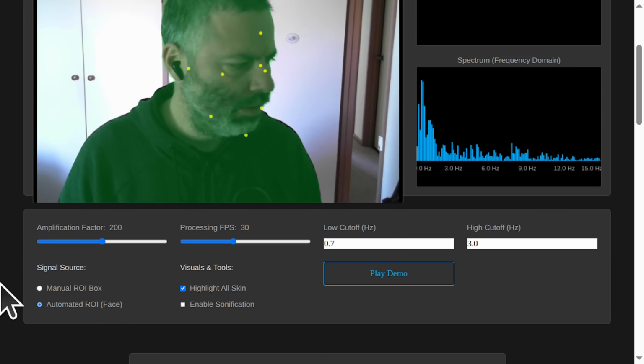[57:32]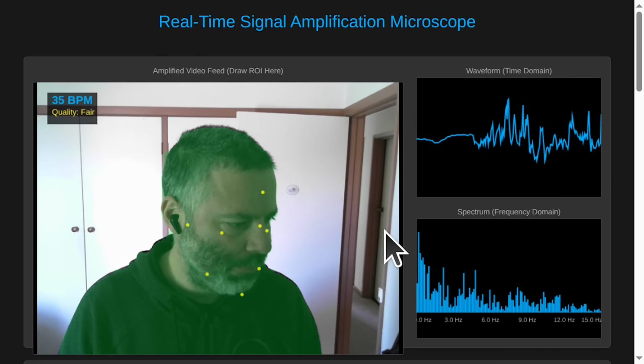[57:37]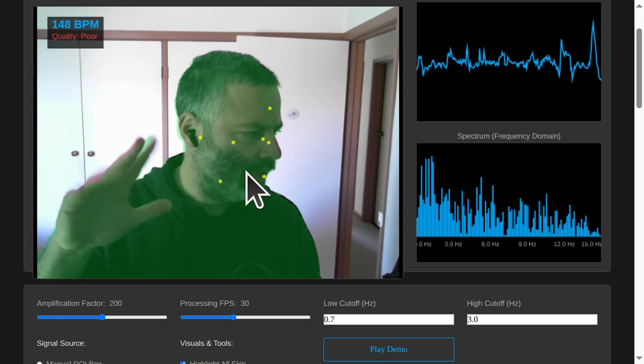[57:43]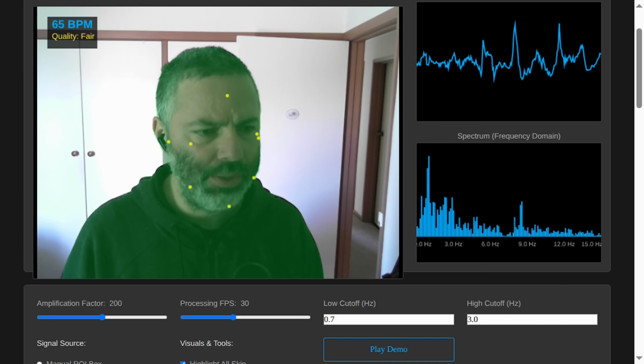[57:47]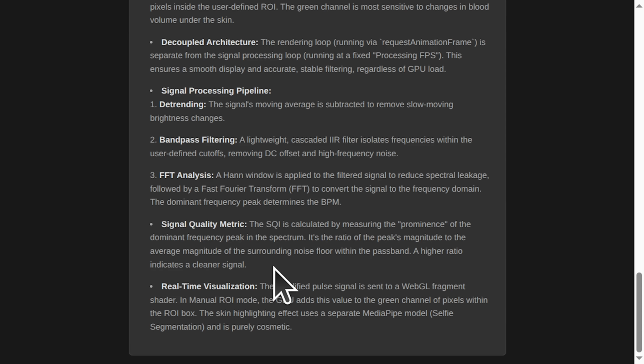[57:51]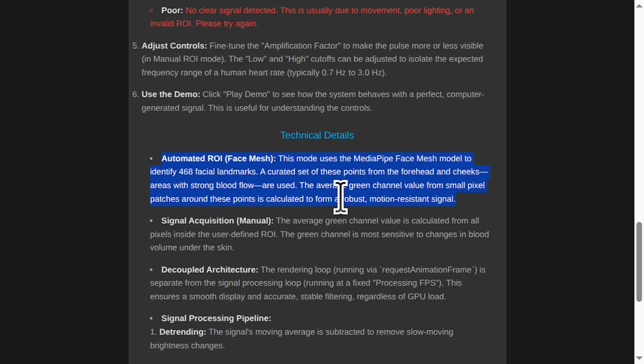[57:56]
A Gemini 2.5 Pro. Yeah, so we know the manual ROI is working. We can actually extract the heart rate. Not sure if the automated ROI is working correctly. Currently it's extracting skin. It's not doing a very good job. Yeah, doing FFT, all that seemed to work. Real time. Yeah, the face mesh.
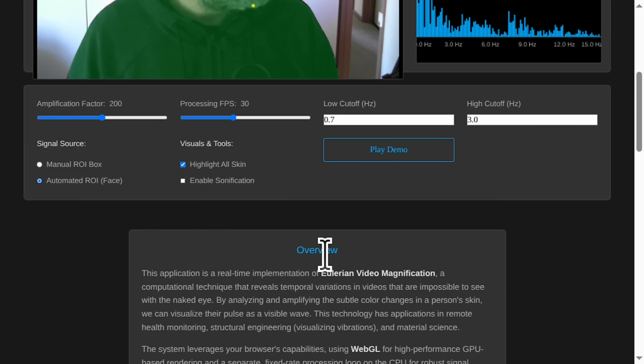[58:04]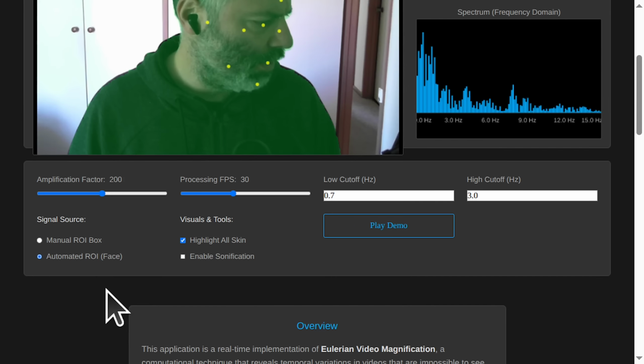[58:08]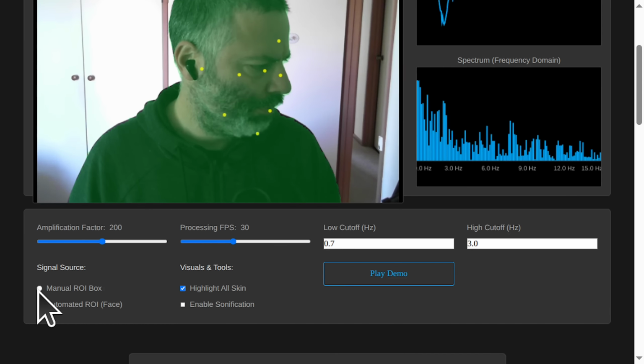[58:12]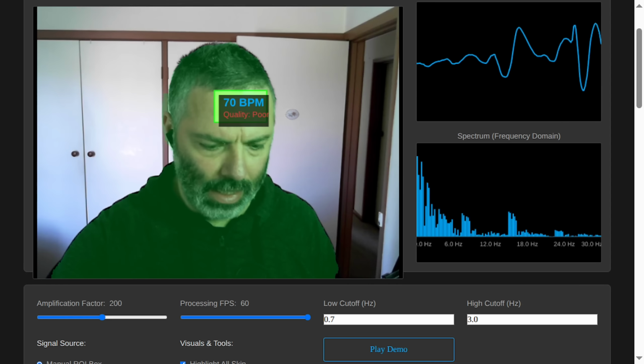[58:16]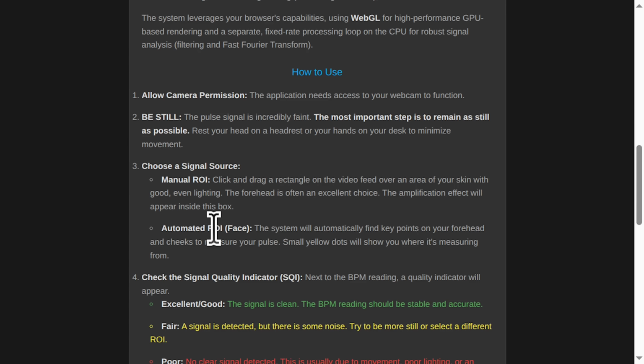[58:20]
Yeah, that's not correct. The sonification should be also happening just within the manual box. Yeah, well, anyway, it's definitely there. Yeah, we need some more work on the automated ROI selection, specifically for it to choose the skin.
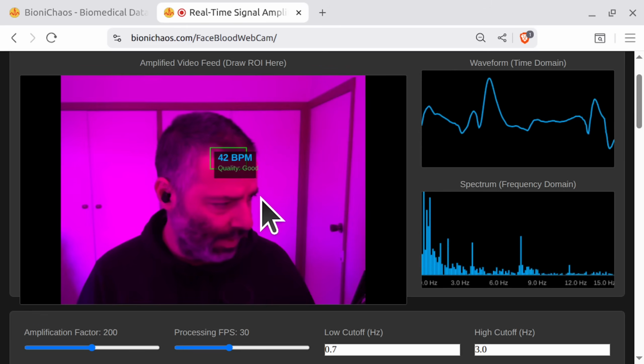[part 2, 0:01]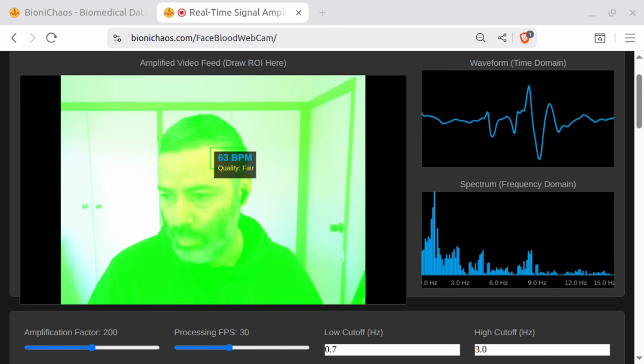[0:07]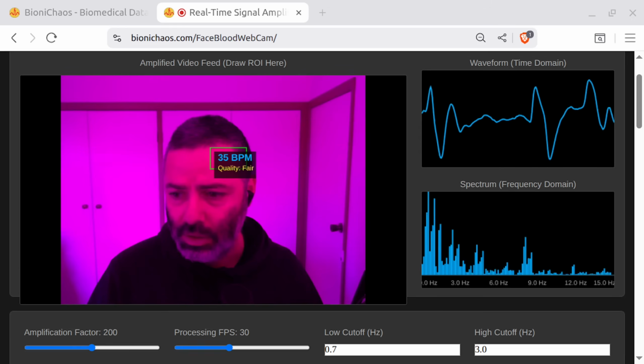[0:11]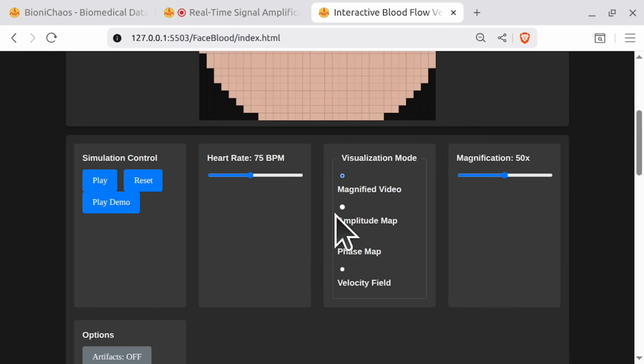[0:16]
This one has the flashy bit and is showing a wrong beats per minute. It's a bit unfortunate. We have different versions for it, different versions. I have different browsers.
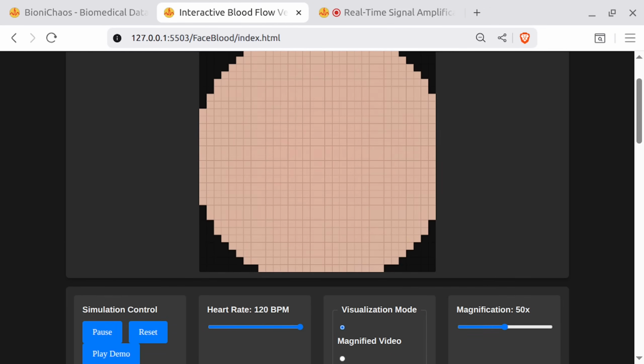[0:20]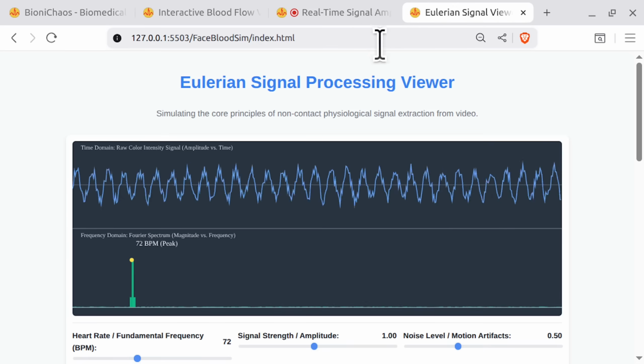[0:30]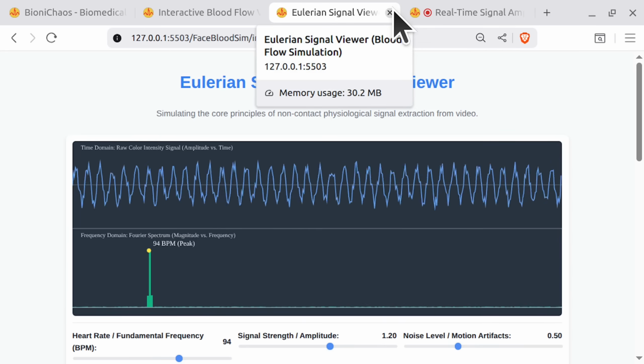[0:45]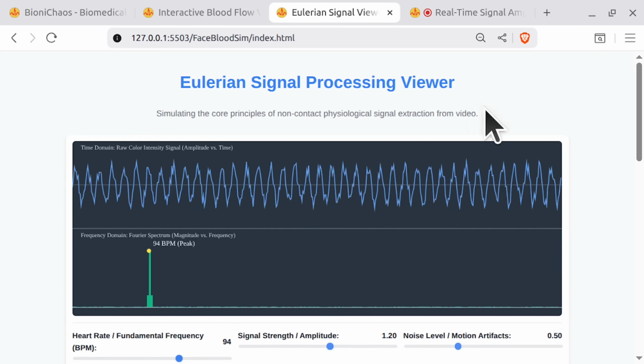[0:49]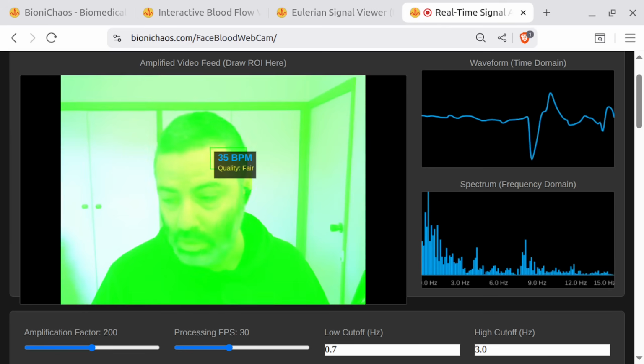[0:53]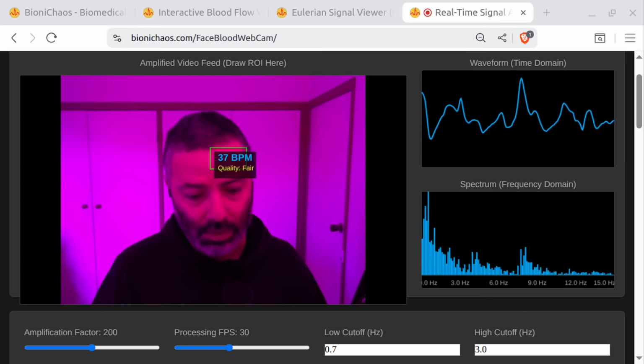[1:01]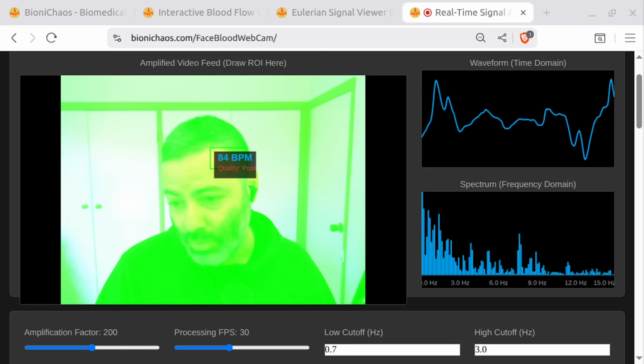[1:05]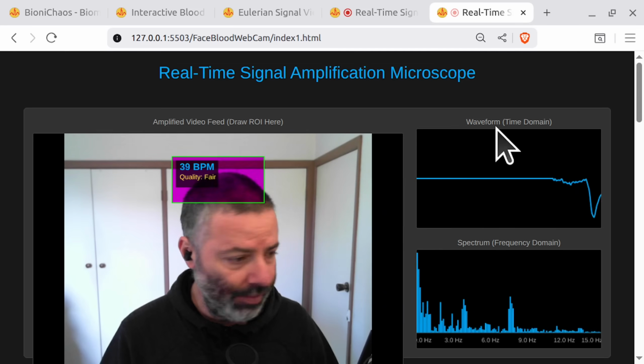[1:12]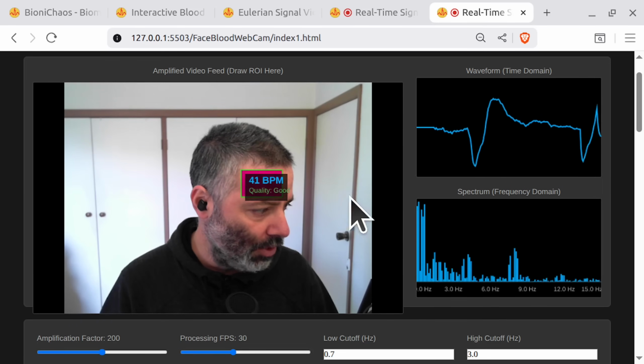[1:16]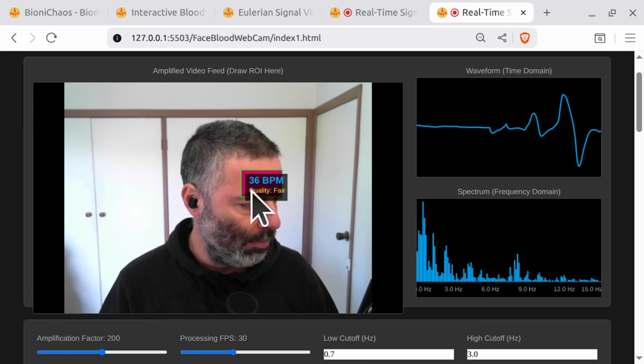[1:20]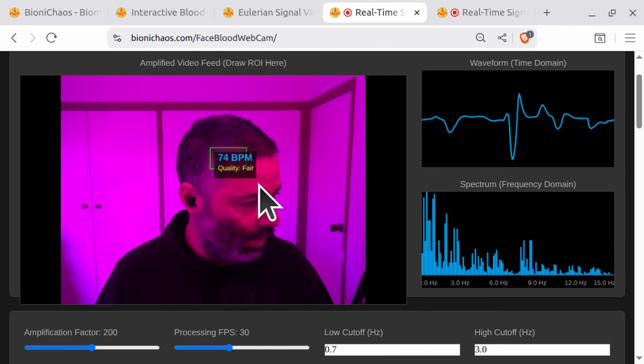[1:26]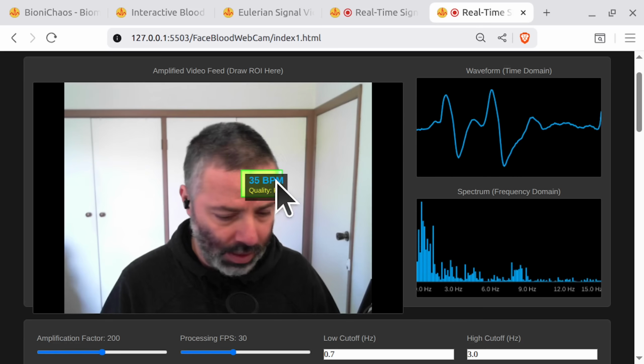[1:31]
But then with this one we had already like 10 or so versions of this. This is the one we have deployed. We have another one, an updated version. I don't remember what the change was. The change was that the amplification will only be shown for the region of interest instead of the whole thing. But the region of interest still needs to be manually selected.
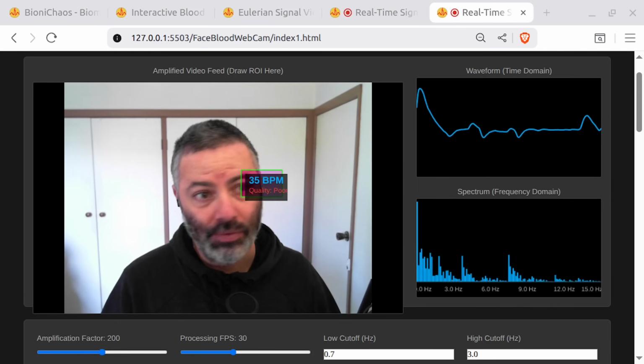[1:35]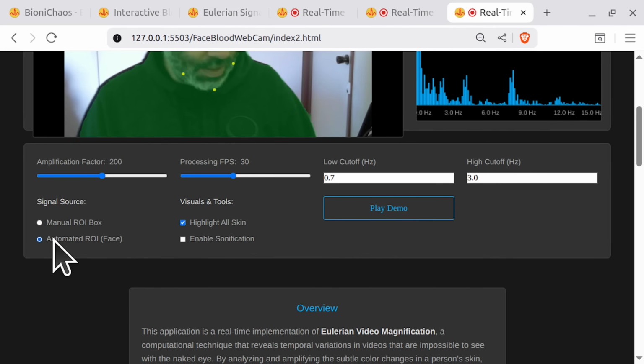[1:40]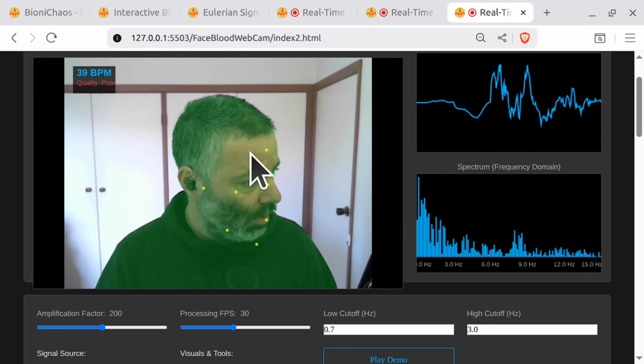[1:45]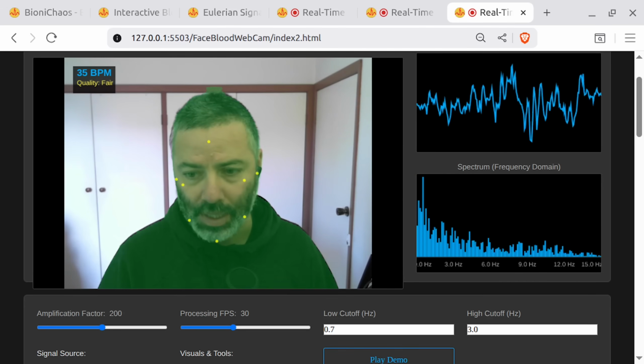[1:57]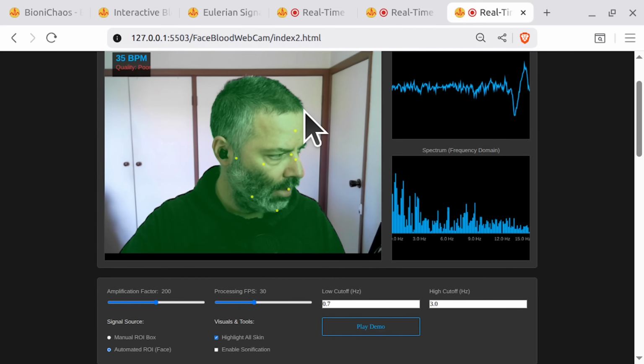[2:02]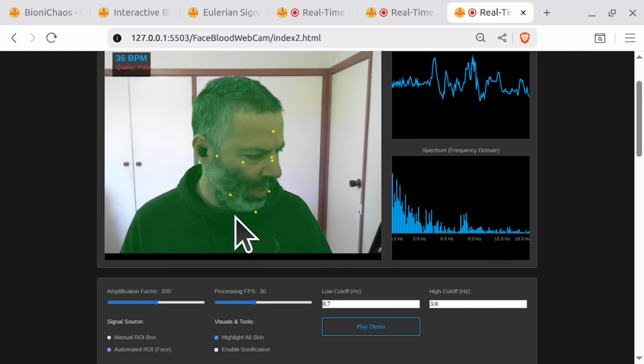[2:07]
And we have a third version. In this case, we'll have an automated ROI selection. So we'll find your face and do an ROI around it. The problem is, it's trying to mark your skin, but it's not doing a really good job at it. I don't get any signal out of it. So the signal quality is not good. We need a better ROI.
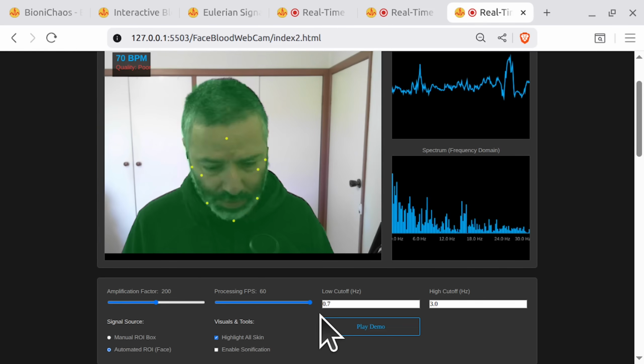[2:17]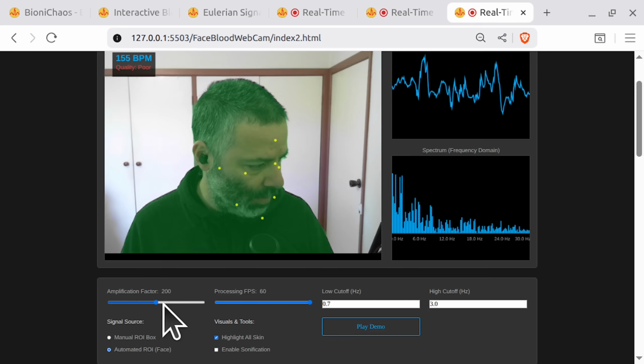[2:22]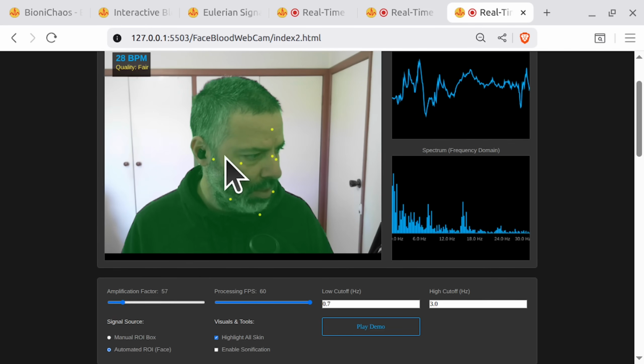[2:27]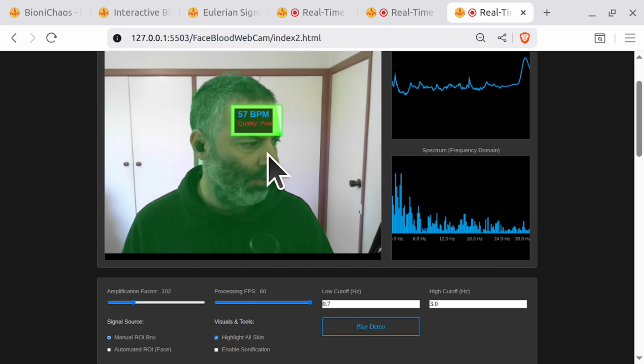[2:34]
Frames per second, yeah, I can make it higher, but not losing any frames in the video recording and the streaming. I'm not sure if the amplification factor only affects the display. If you're doing manual ROI, yeah, now we can see it. It should recalculate.
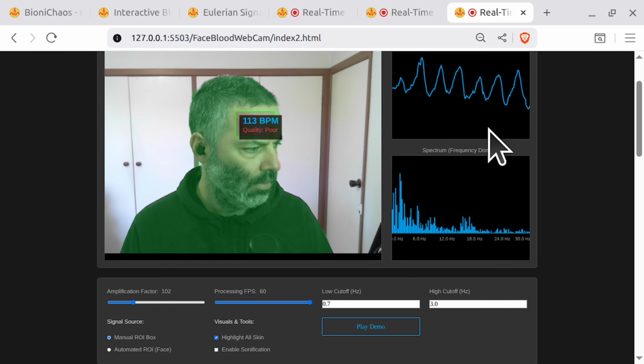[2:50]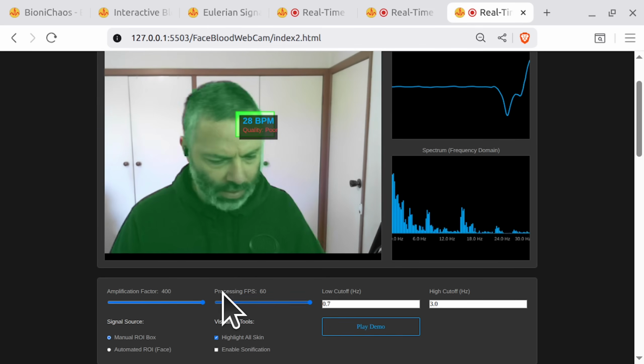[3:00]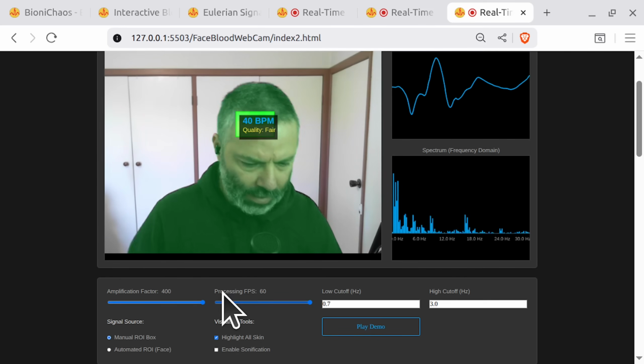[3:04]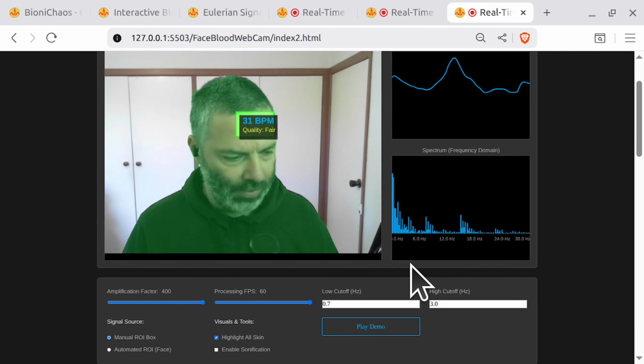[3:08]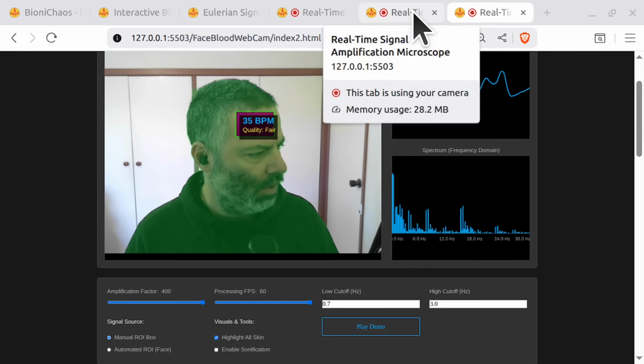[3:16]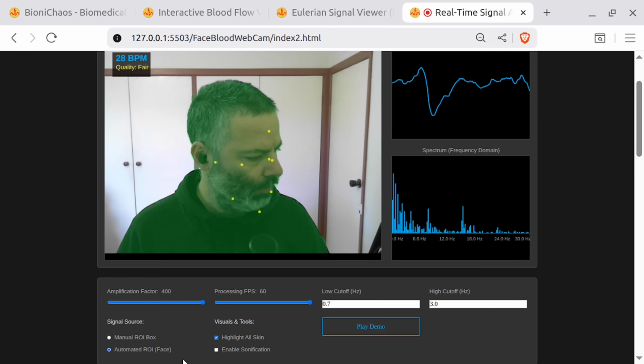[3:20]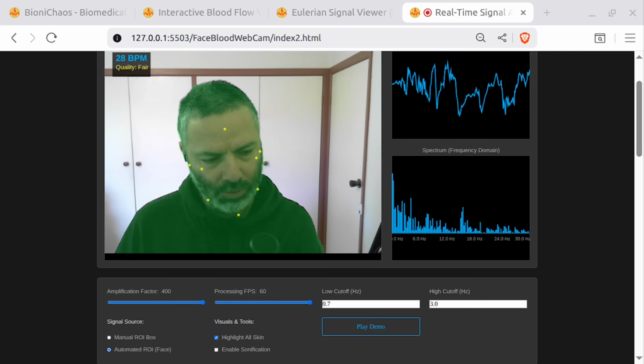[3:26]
Are you sure it's not 127? That's like 68, 66, and the 70s. We expect around 70. Is there anything flashing? Sometimes there's something flashing on the screen. It can. There might be a calculation issue. Yeah, the automated ROI.
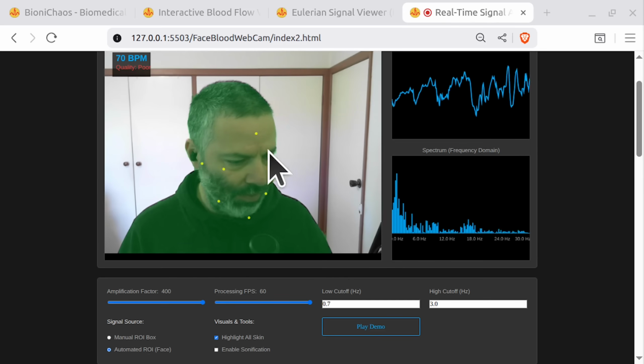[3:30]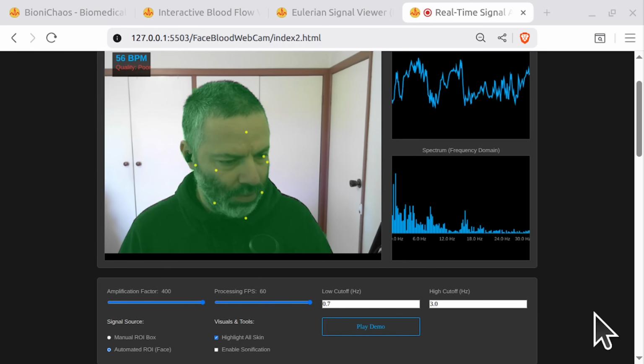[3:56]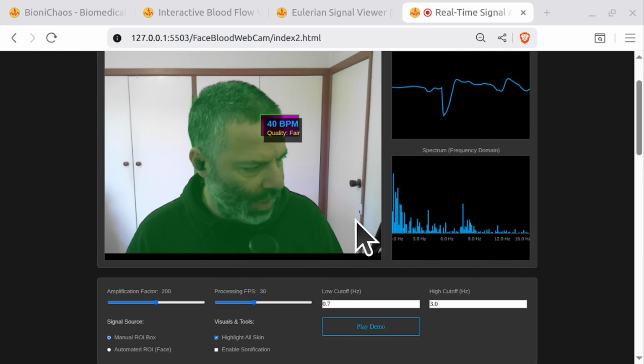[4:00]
Okay, so we have a couple changes that we would like to make. First of all, to do with the x-axis of the chart. For the time domain and frequency domain, can we by default show the x-axis with labels, but also have an option to turn the x-axis display annotations off? Can we also have another option to show the filtered and the non-filtered waveform in both time and frequency domain in different colors?
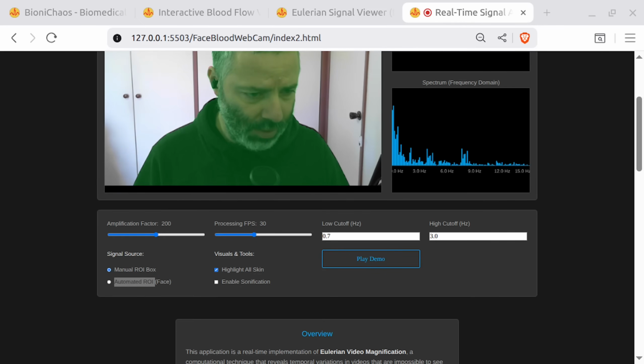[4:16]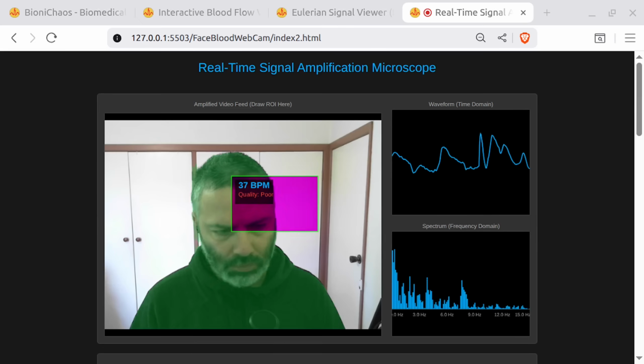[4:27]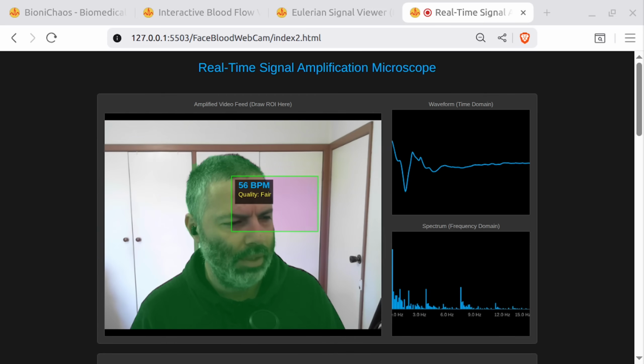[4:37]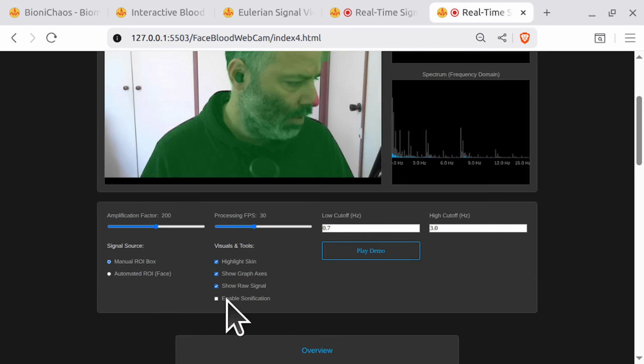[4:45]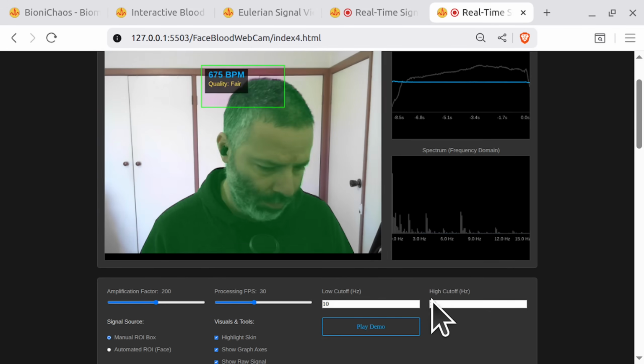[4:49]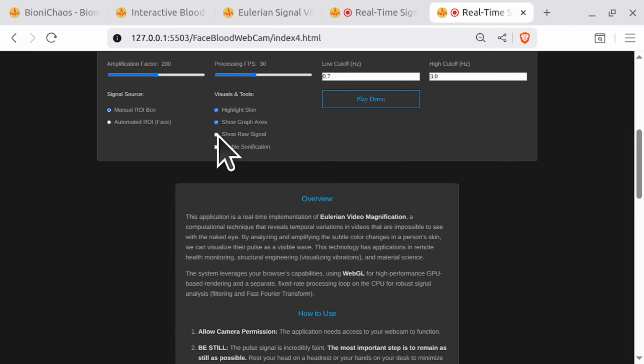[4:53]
Okay, we have a question about the automated ROI. How does the system handle the case where the face is partially out of the frame? Okay, so we get a response: the graph axis control, raw versus filtered signal visualization, expanded technical details, the automated ROI section. Okay, clarification on the automated ROI mode. Okay, we have raw and filtered there. Not sure the filter is working. Wait, let's restart. Show raw signal.
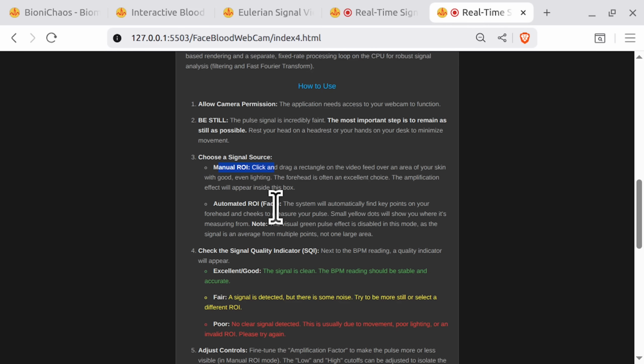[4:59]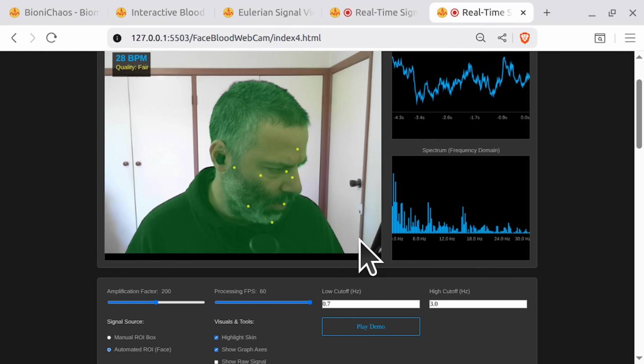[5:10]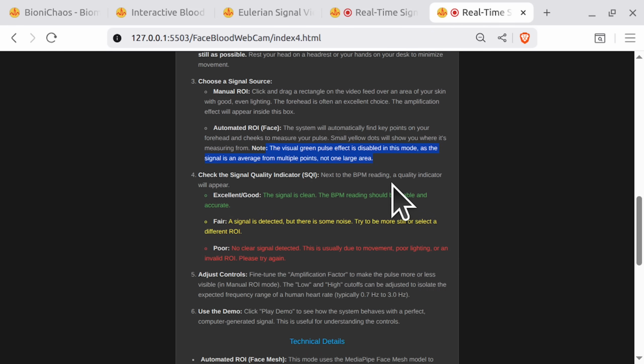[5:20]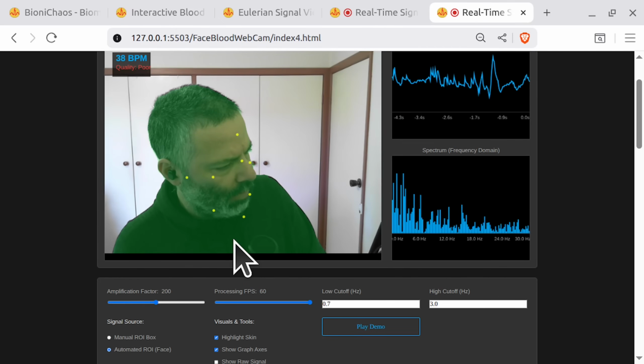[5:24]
Okay, in the automated face, the system will automatically find key points. Small yellow dots will show you where it's measuring from. Well, those are not great. Note that the visual green pulse effect is disabled in this mode as the signal is averaged from multiple points. Well, that's not the case.
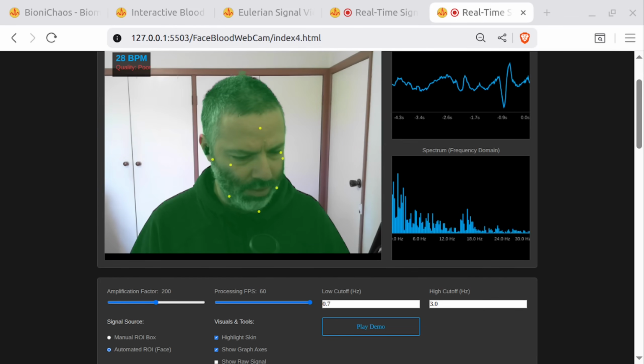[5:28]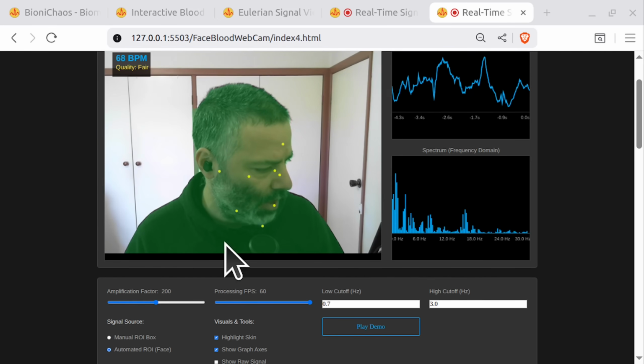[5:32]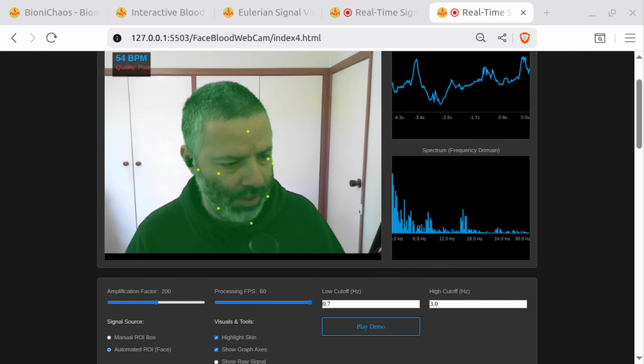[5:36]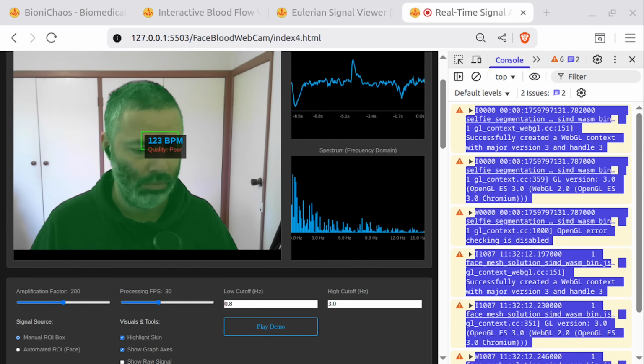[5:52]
Given this image, can we improve the automated ROI selection? Based on the image attached, can we just select the points where the skin is and ignore facial hair and jumper? Will it regenerate the whole code? I don't know. So, what do you think?
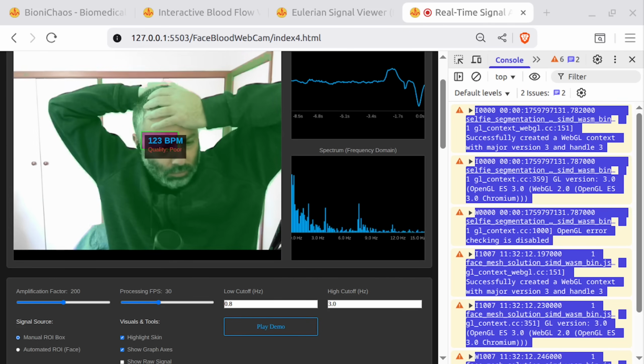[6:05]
Pretty cool, right? We're pulling a heartbeat out of thin air. Okay, hold on. You've built a web page that stares at me, turns my skin a sickly green, and then guesses my BPM with the confidence of a weather forecast in London. Are you trying to diagnose me or make me the Incredible Hulk?
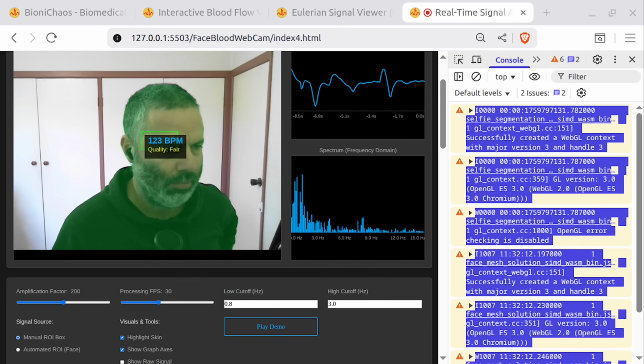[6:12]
It's not guessing, it's measuring. Your heart pumps blood, right? Every time it beats, the capillaries in your skin fill up. More blood means a tiny, tiny change in the color of your skin. We're just making that tiny change visible. We're amplifying reality. You're amplifying the fact that I'm slowly turning into a tomato every second.
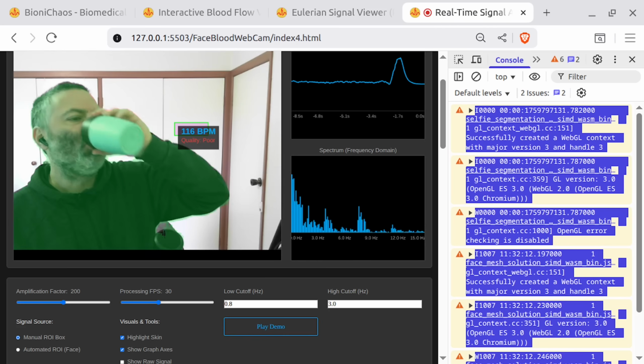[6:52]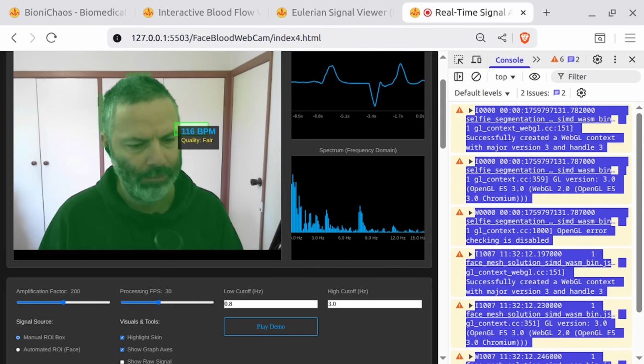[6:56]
That's my secret. So the code is basically a digital vampire that looks at my face instead of my neck. Less messy, I'll give you that. Exactly. Except it's looking for the green channel. Blood absorbs green light, so when your face flushes with blood, it reflects slightly less green. We grab that signal, filter out all the noise, and amplify it. Noise? You mean my witty commentary? I mean, you swaying, the lights flickering, your cat walking behind you, all that stuff is a tidal wave of signal noise.
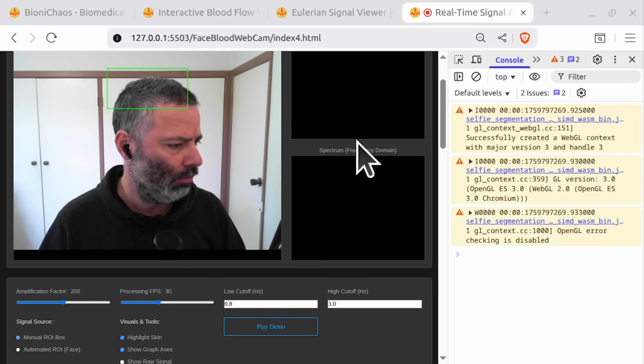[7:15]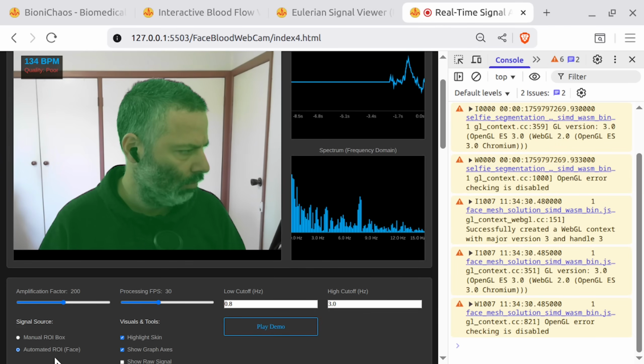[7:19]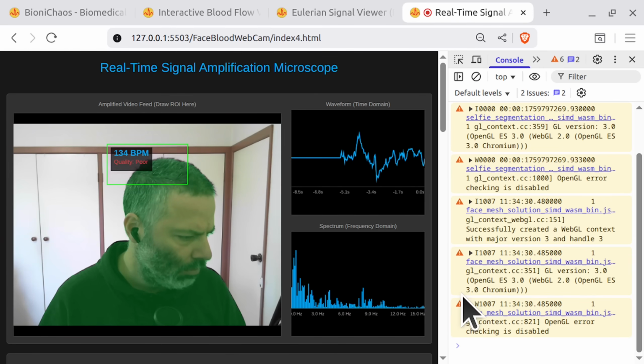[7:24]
The pulse is like a tiny ripple in that wave. That's what the Cascaded Band-pass filter in the code is for. It's a bouncer for light frequencies. It only lets frequencies between, say, 0.8 and 3.0 hertz into the club. So it kicks out the super slow "I'm leaning in my chair" frequencies and the super fast "a fly just buzzed past the webcam" frequencies? Precisely. It only cares about the range where a human heartbeat lives.
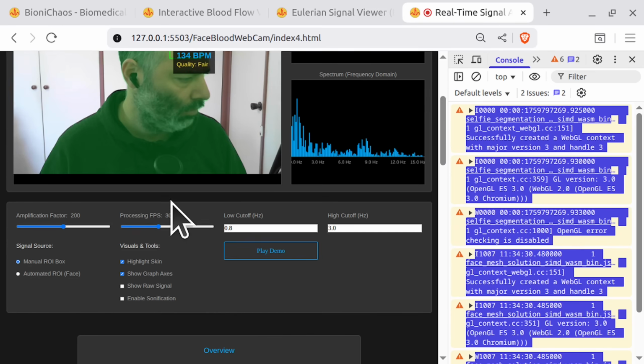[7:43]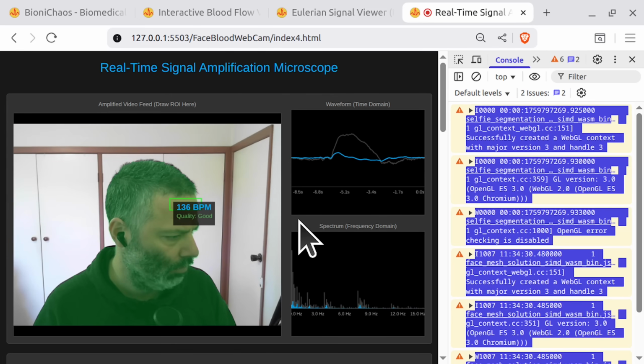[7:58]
Then we take that clean signal and feed it into the FFT. The what now? The fantastic face thingy? The Fast Fourier Transform. It's a mathematical magic trick. It takes a complex signal over time, your face wobble, as you'd call it, and breaks it down into all the simple frequencies that make it up. It's like tasting a smoothie and being able to tell someone exactly how much banana, strawberry, and spinach is in it. So my face is a smoothie, and the FFT finds the dominant flavor, which is pulse.
And that bar chart graph is the recipe. That's a surprisingly perfect analogy. The highest bar on the frequency graph is the strongest note in your pulse signal. We just convert that note's frequency into beats per minute. Okay, but what about the yellow dots? It looks like my face is being prepped for acupuncture by a very indecisive robot.
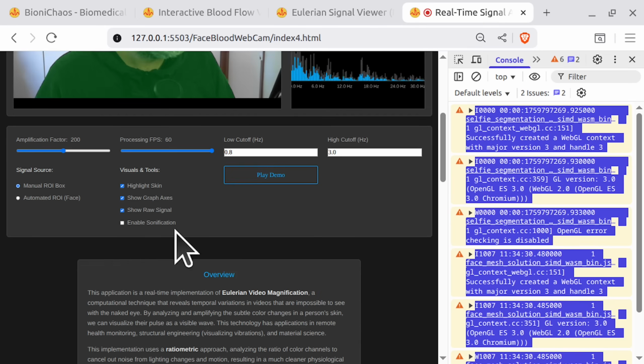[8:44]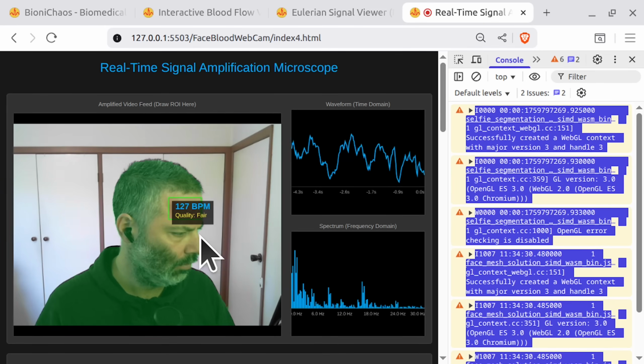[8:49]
That's the automated ROI mode. That's MediaPipe Face Mesh. It finds 468 specific points on your face. We cherry-picked a few on the forehead and cheeks because the signal is strongest there. But then we hit a problem. Let me guess. Beards. Beards! The ultimate signal destroyer. It's like trying to listen for a pin drop through a woolly mammoth. The AI would happily put a dot on your beard and try to measure the pulse of your keratin. A noble but fruitless endeavor.
My beard's pulse is a steady 0. Thank you very much. So how did you make your app less beardist?
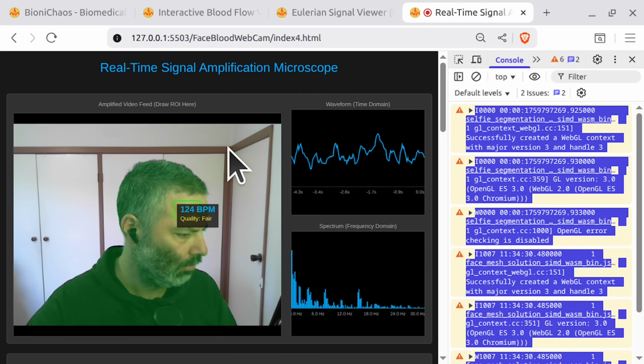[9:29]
With another AI, of course. We run a skin segmentation model at the same time. On every frame, before we measure, we ask the skin model, "Hey, is this dot actually on skin or is it on a glorious beard?" If it's not on skin, we just ignore it for that frame. You're using an AI to check another AI's homework. I love it. It's like having a bouncer for the bouncer.
But even that wasn't enough. The biggest problem was lighting. If a cloud passes overhead, your whole face gets darker. The old code would freak out and think you were having a medical emergency. Right, because the "I'm in a shadow" signal is way bigger than the "my heart is beating" ripple. Exactly. So we got clever.
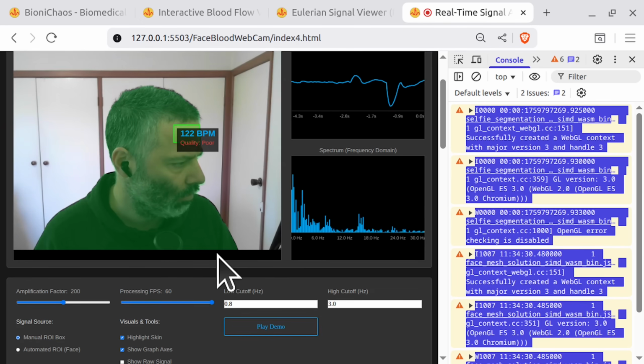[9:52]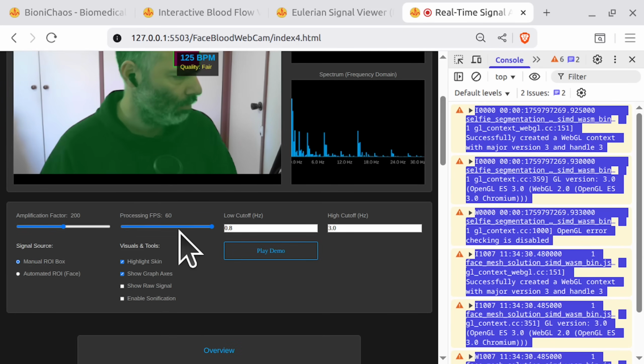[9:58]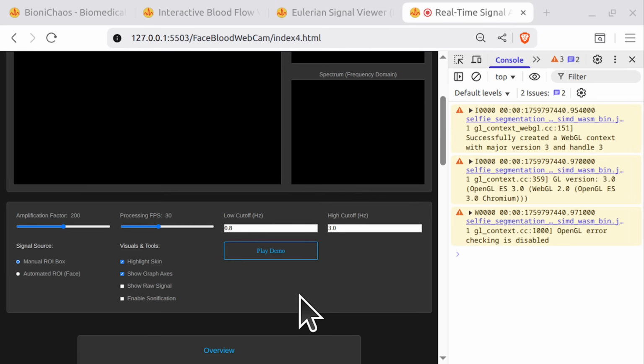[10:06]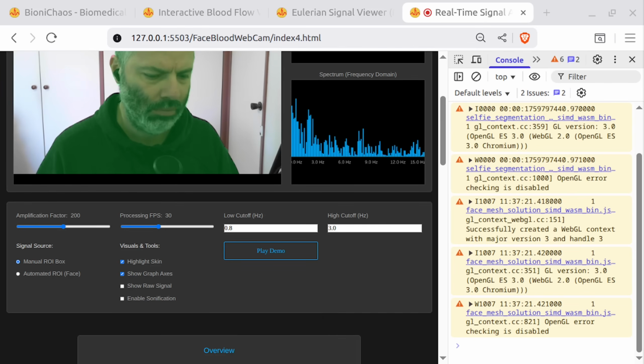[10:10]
We went ratiometric. Instead of just looking at the green value, we now calculate green divided by red plus blue. You're dividing colors now? Are you inventing new ones? What is green divided by red? Puce? Think of it this way. When a shadow covers you, red, green, and blue all go down by, say, 20%. But the ratio between them stays the same. The change cancels itself out.
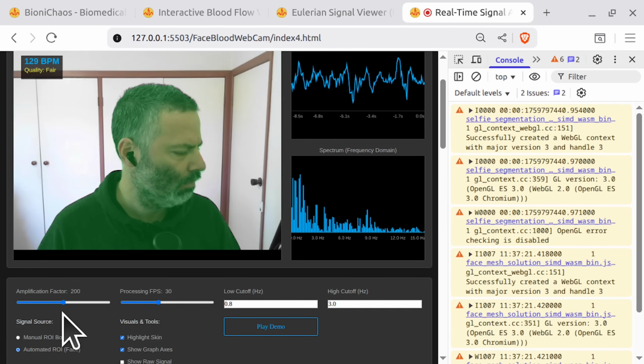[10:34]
But your pulse mostly affects the green value. So when your heart beats, the green divided by red plus blue ratio wiggles. We isolated the pulse from the noise. That is genuinely brilliant. You're not looking at the volume of the music, you're looking at just the baseline.
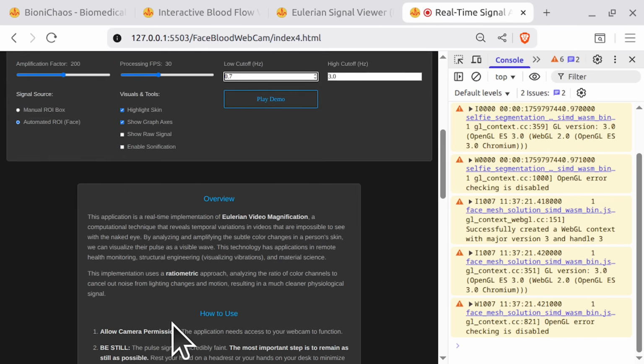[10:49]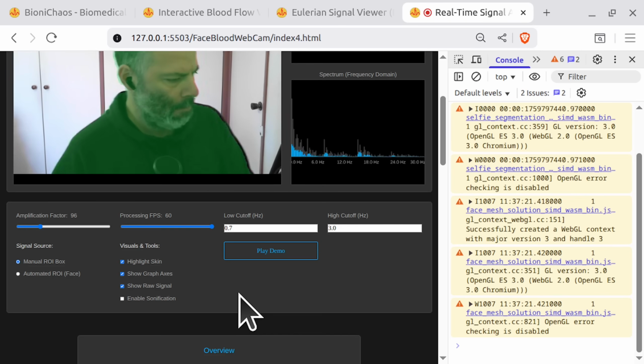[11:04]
So what's the end game? You sell this to doctors for telemedicine? That's the dream. Remote health monitoring, fitness apps, maybe even lie detectors. I was thinking more practical. I could use this to see if my date is bored by checking if their heart rate is dropping to hibernation levels, or point it out my front door to know if the pizza guy is excited to see me. I hadn't considered the pizza delivery application, but yes, technically it would work. See? You build the reality amplifier, I'll find the ridiculous uses for it. It's a partnership. Now, if you'll excuse me, I need to go see what my ficus tree's heart rate is.
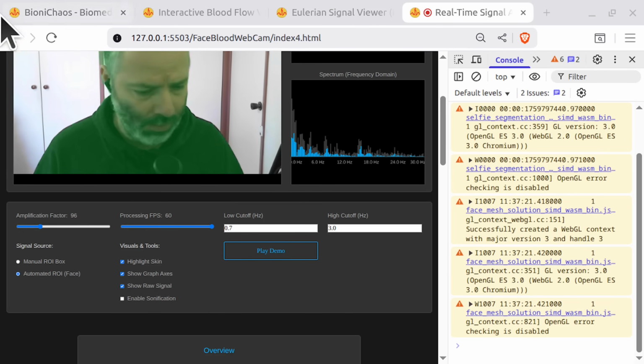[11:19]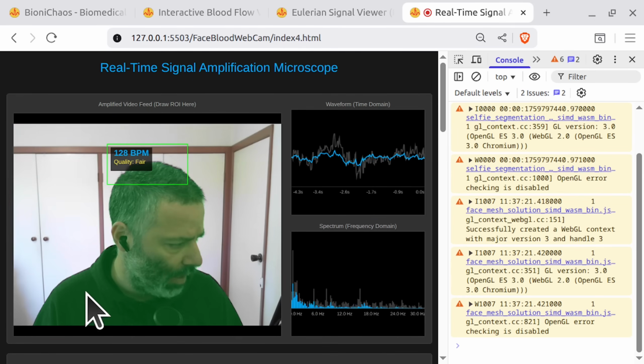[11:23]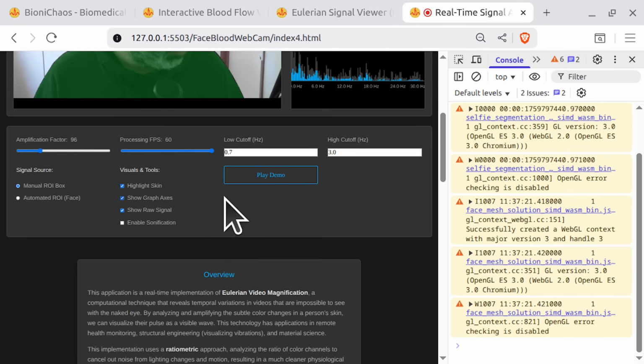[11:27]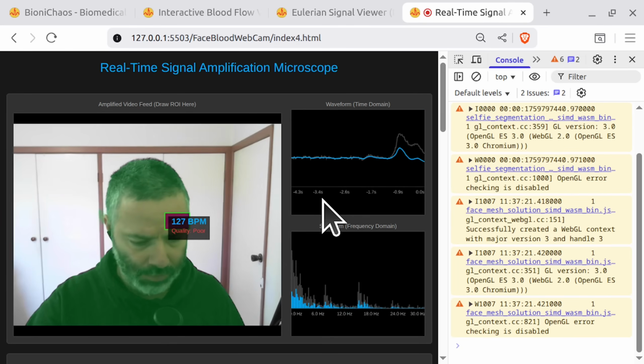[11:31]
For science. A bit of trouble fixing this. So manual ROI works. And now we're also showing the noisy signal and the filtered one. Just make sure we're getting the beats per minute correctly.
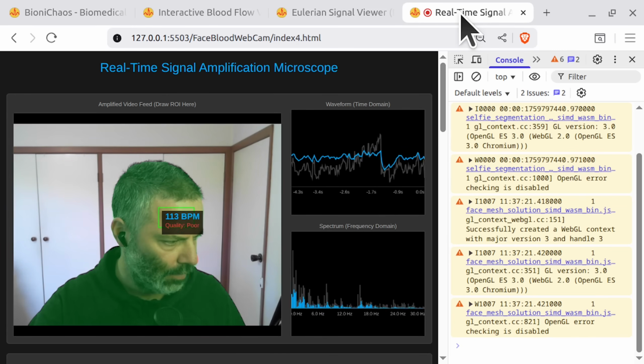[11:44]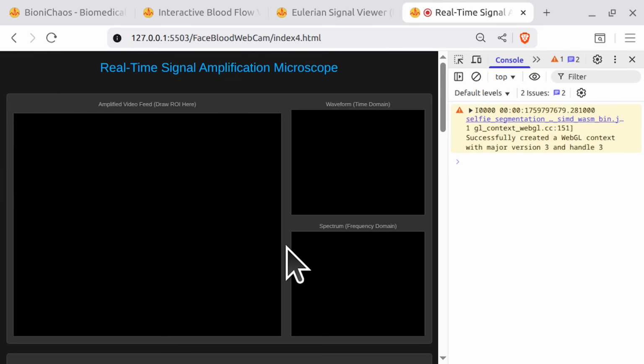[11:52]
Changing the light to warm LED. One of them was better. There are certain light conditions that made the recording better. Go for the default values for a sec.
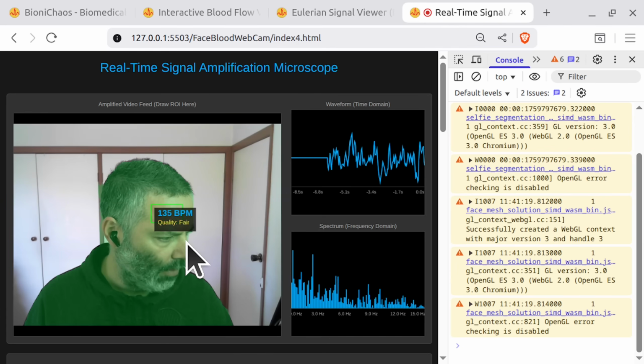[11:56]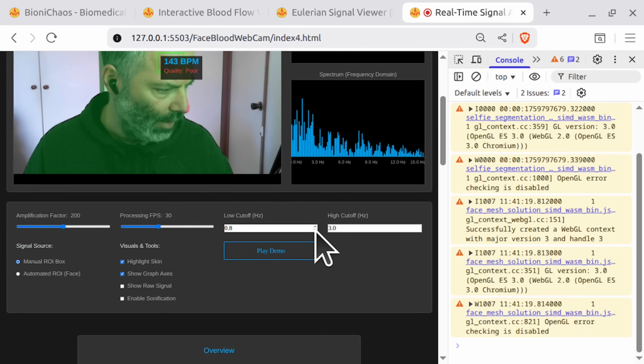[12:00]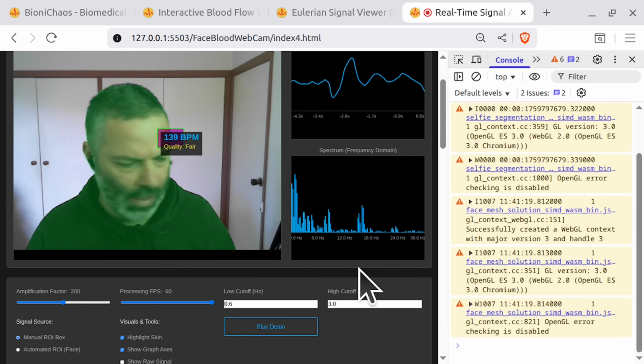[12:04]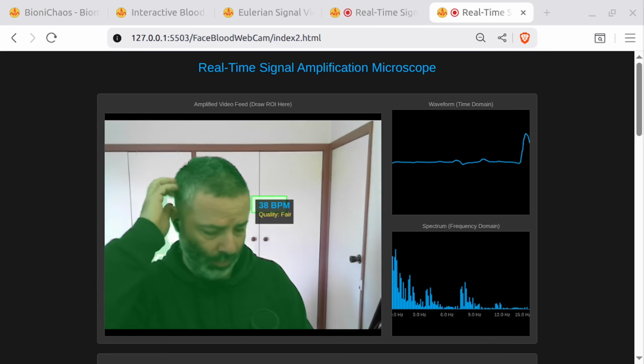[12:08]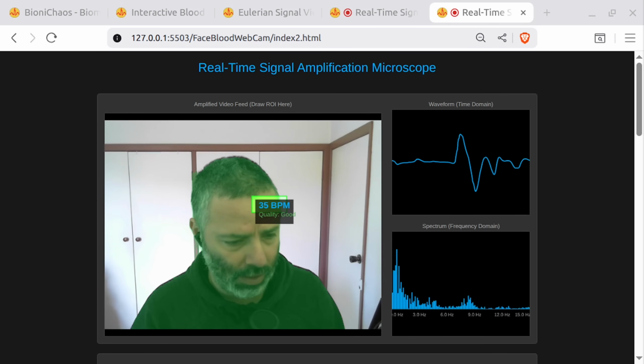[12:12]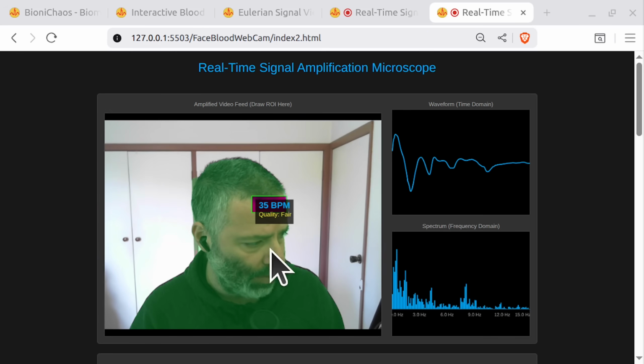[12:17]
Don't know if the ROI is big enough. Yeah, I'm not getting strong enough signal. Can run it a bit faster. There's something not right. Okay, there's a few problems. Did you change anything to do with the calculation of the actual beats per minute of the heart rate?
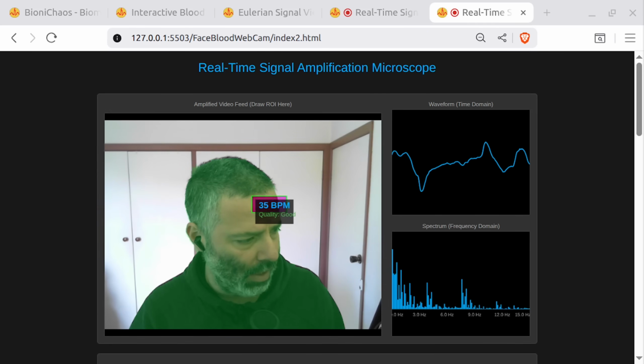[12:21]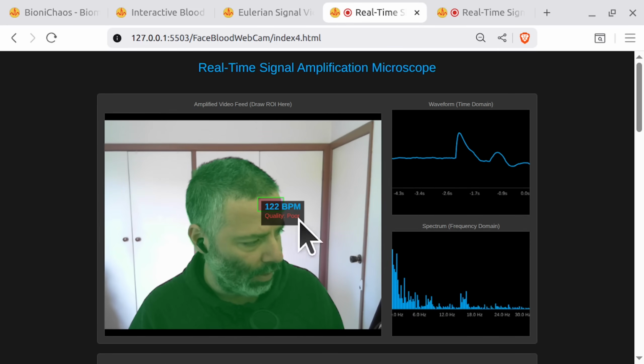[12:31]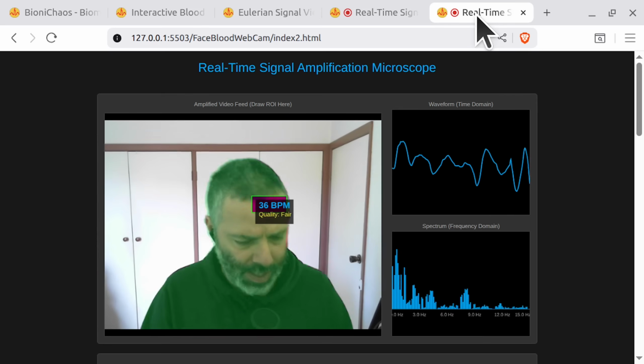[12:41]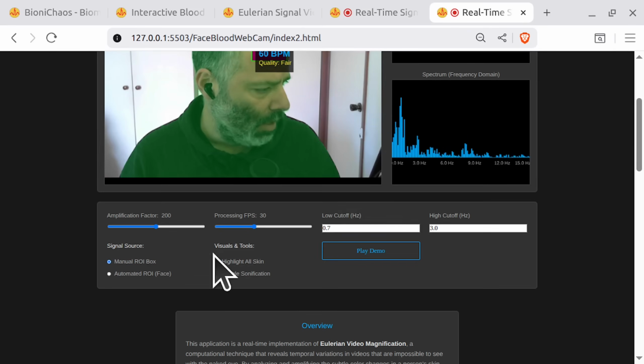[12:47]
Because it seems like the previous version could have been better, and now I seem to be struggling getting a higher quality signal. Can you explain why that might be happening? Yeah, we had the previous version essentially working better. I think it stuffed up something with the calculation. Because we added more functionality.
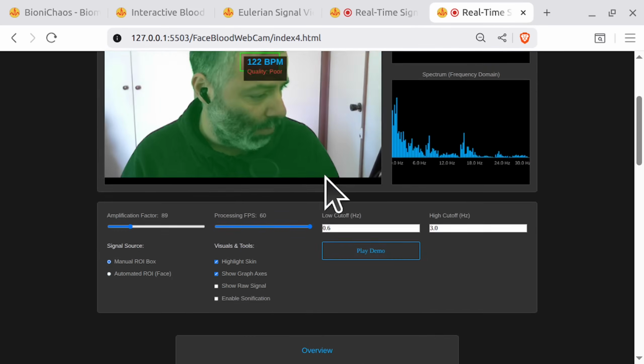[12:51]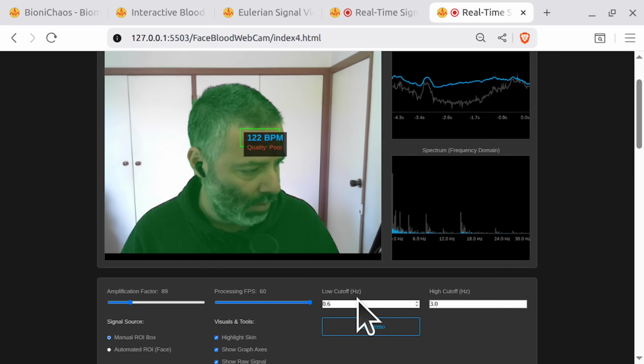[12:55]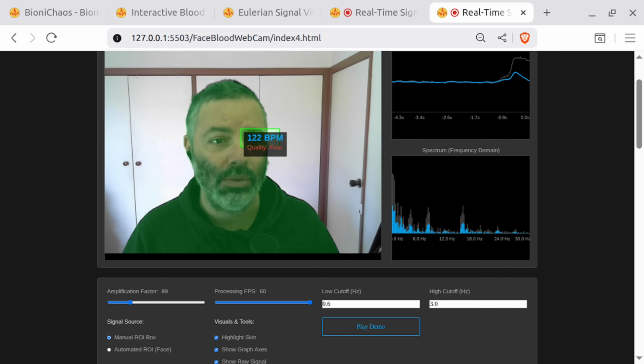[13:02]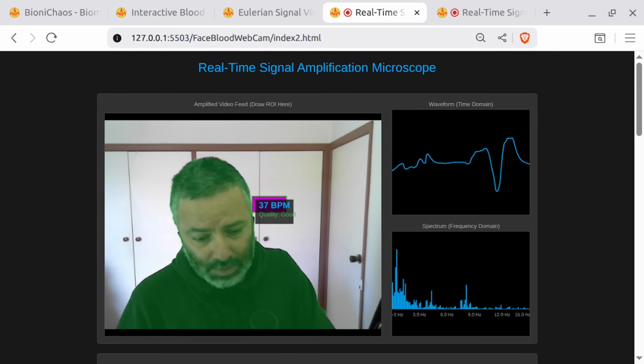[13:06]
So this version 4 can show the raw signal before filtering. Even that, I'm not sure it's working correctly. This is all brought to you by Gemini 2.5 Pro. I might get Claude or something to double check the code.
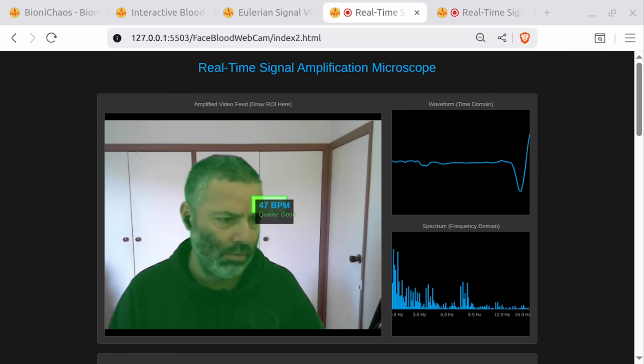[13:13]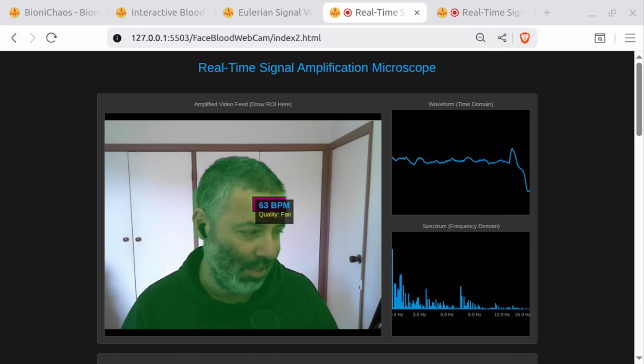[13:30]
Yes, so you're absolutely right. The previous version might have seemed better, and the new version is likely struggling to get a high quality signal. We did not change the core BPM calculation. Yeah, the old signal, raw green, was the value from the camera. So it changed. We used to look at only the green channel.
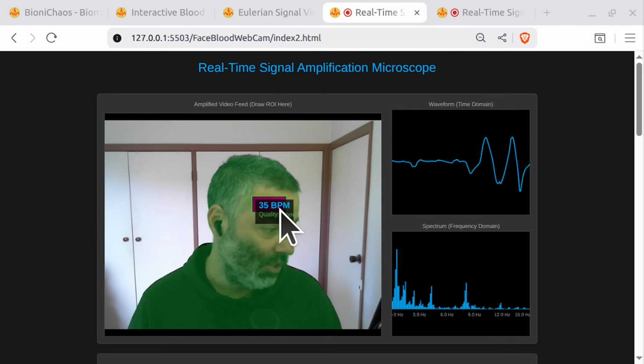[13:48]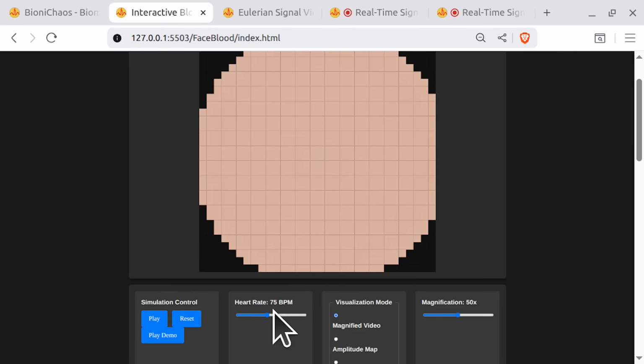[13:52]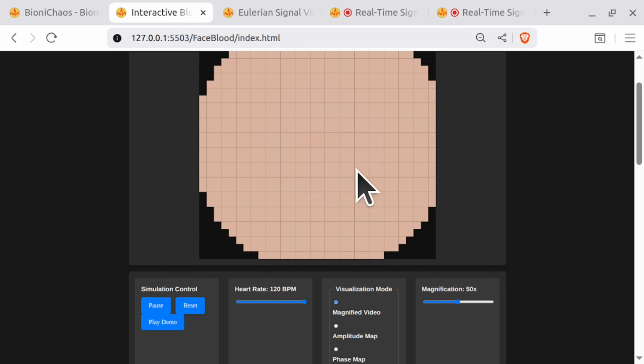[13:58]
Typical value of this again might be 150. Tiny pulse fluctuation might change from 150.0 to 150.2. So that's the kind of changes we're looking for in the camera. We have this simulation as well for a skin patch. So it's the kind of minor changes we're looking at.
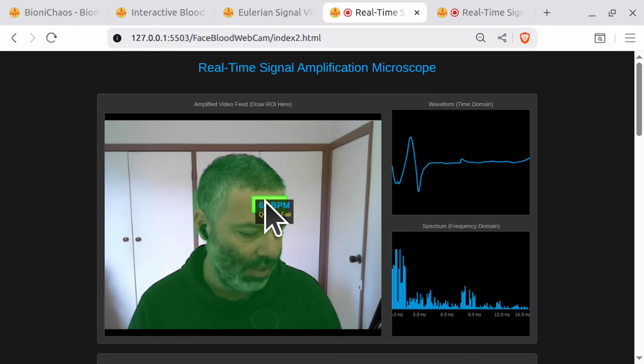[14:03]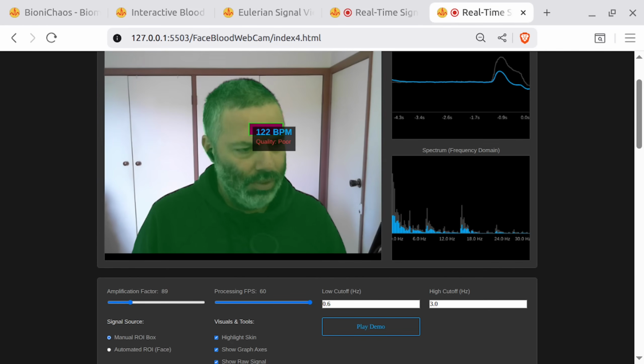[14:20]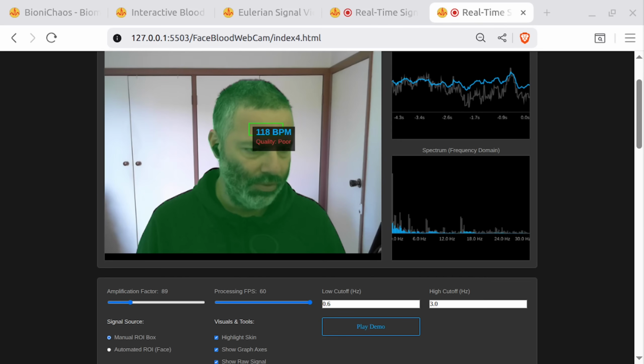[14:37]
The amplification there is meant to be within the region of interest. Actually meant to see the color change. It is there. So just looking at the green channel. A new signal is ratiometric, a typical ratio for G divided by red and blue might be around 0.5. Tiny pulse fluctuation. Our entire processing pipeline, filtering, FFT, visualization was implicitly tuned to handle the larger number from the old method.
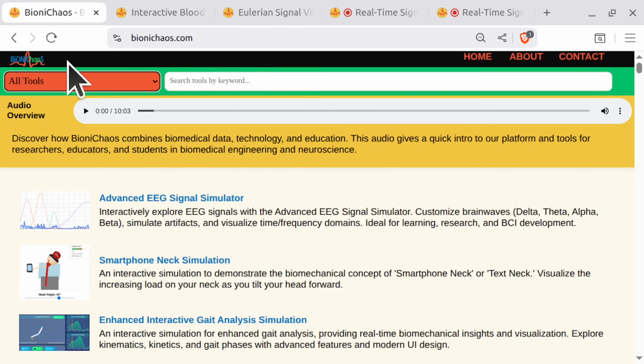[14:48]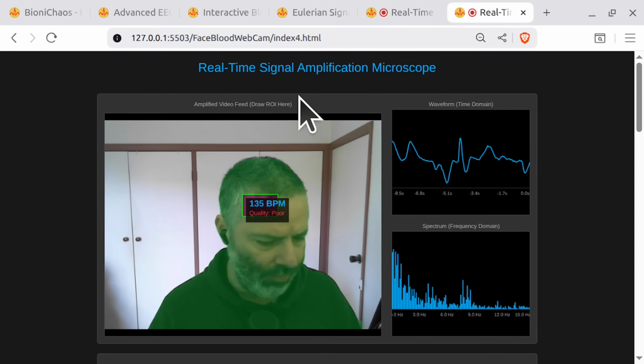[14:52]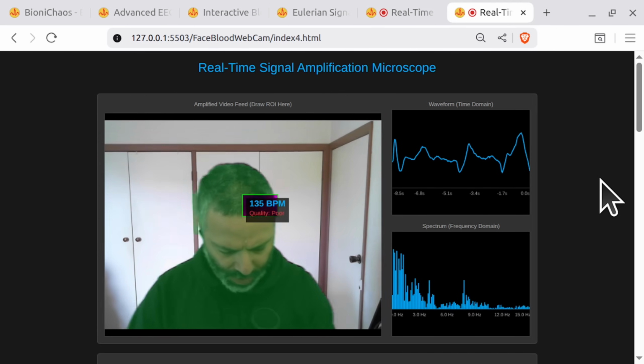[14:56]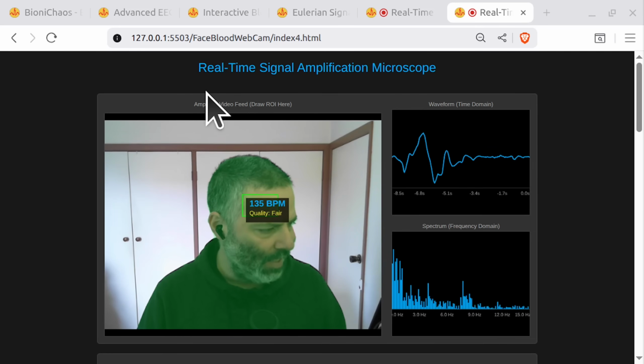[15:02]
So everything we do is available eventually on BioniChaos.com. Anyhow, we have a bunch of versions of this thing. We're trying to, so it's like an amplification microscope. You have like a TED talk on this from whatever 10 years ago. There was a lot of hype around it. That's, by the way, incorrect.
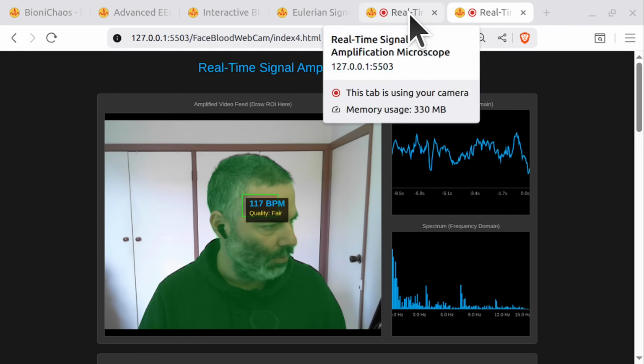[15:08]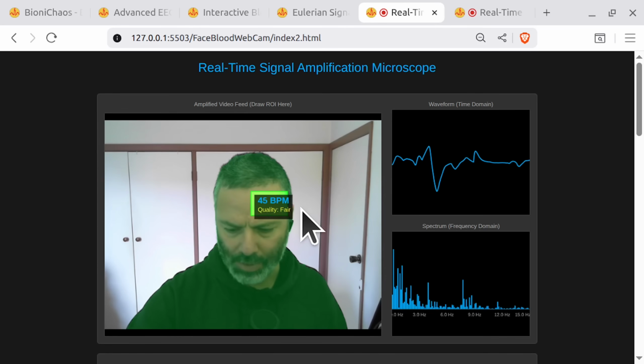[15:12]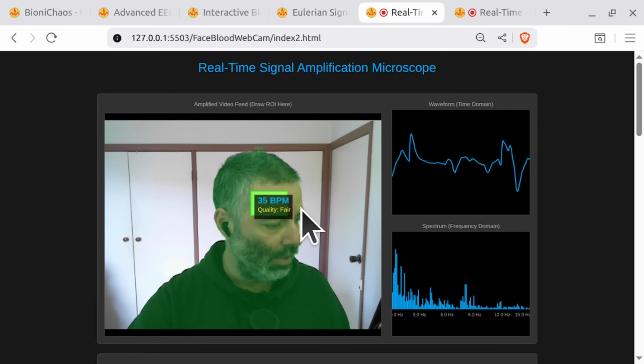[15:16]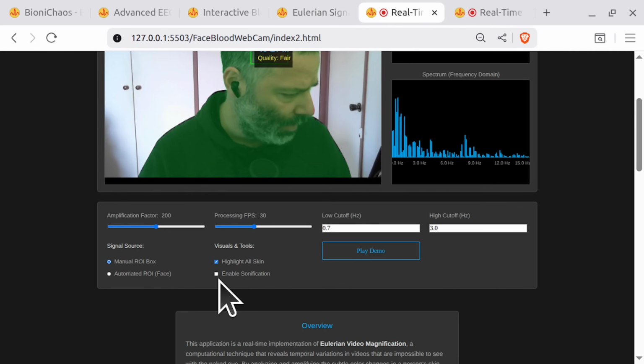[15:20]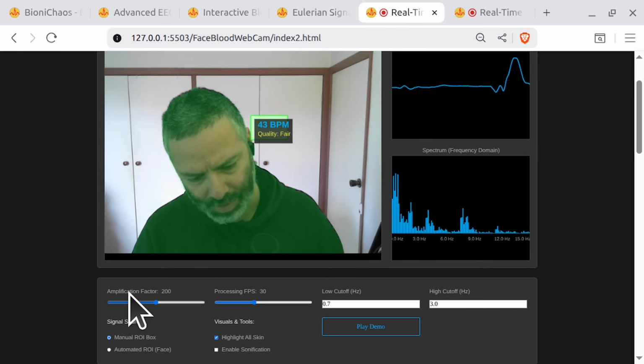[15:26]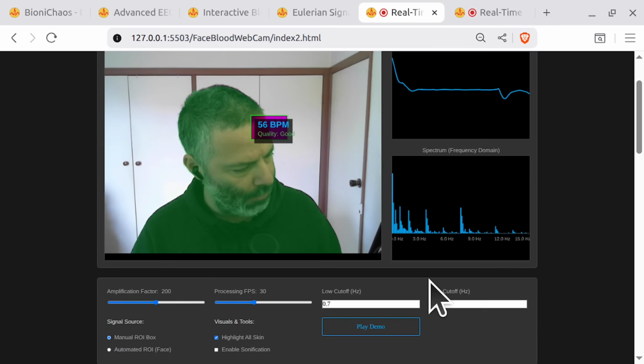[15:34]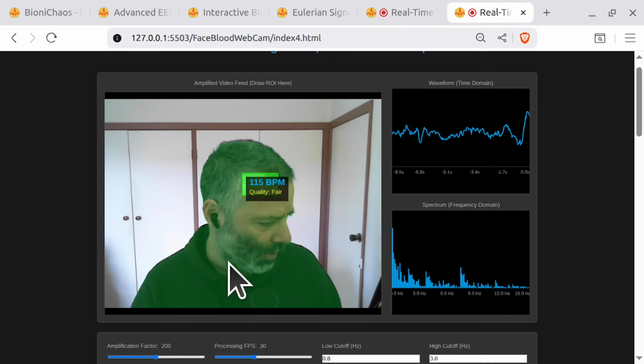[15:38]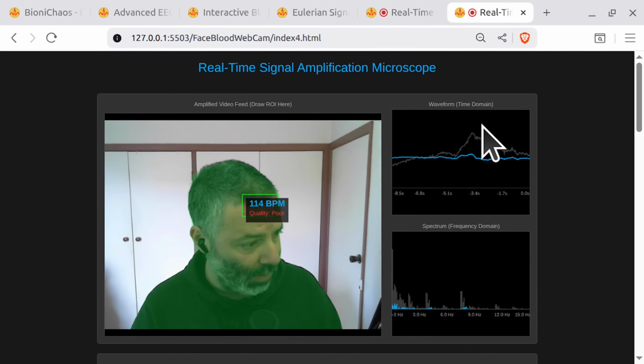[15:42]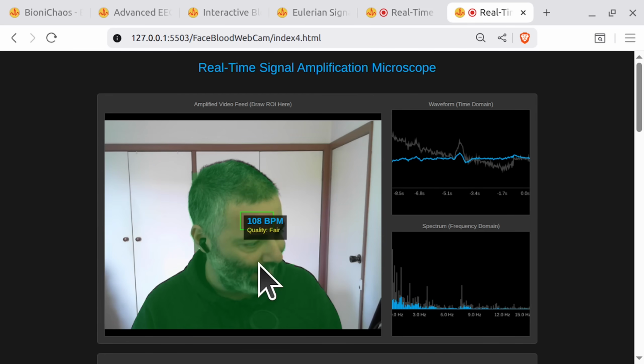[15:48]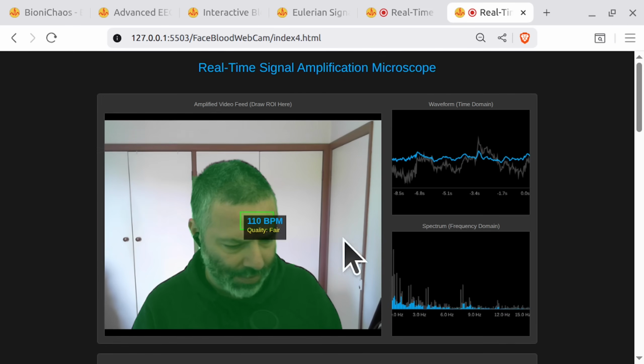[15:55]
I have to stop moving to actually be able to record something. This version needs some better light as well. So if I don't move, certain specific light conditions, wait, what are the settings? Yeah, we're trying to automate the region of interest selection. Yeah, I have filtering in the new version. You can actually see the raw signal and the filtered one overlaid on top. Standard stuff. Don't get too excited about that, because I'm having trouble getting a high quality signal.
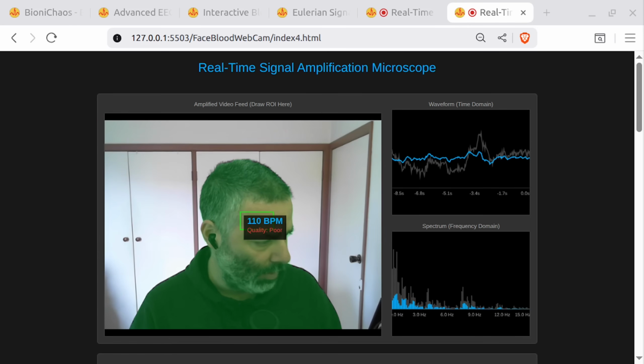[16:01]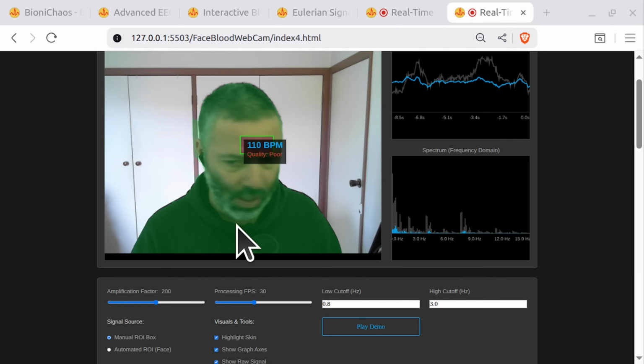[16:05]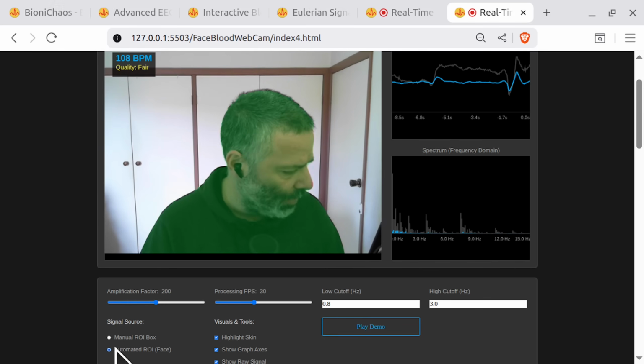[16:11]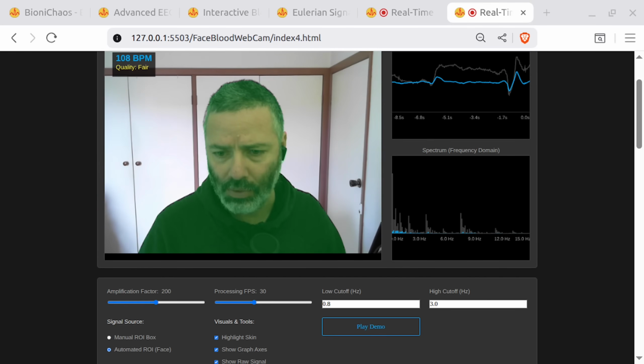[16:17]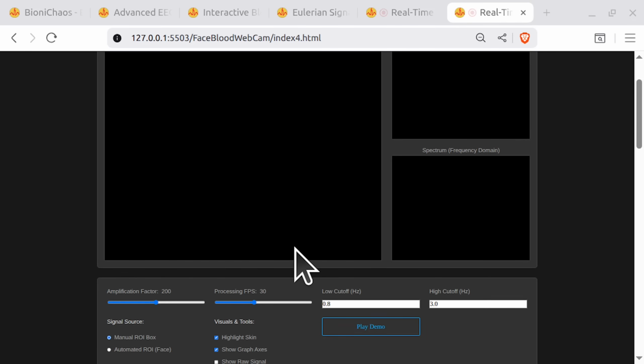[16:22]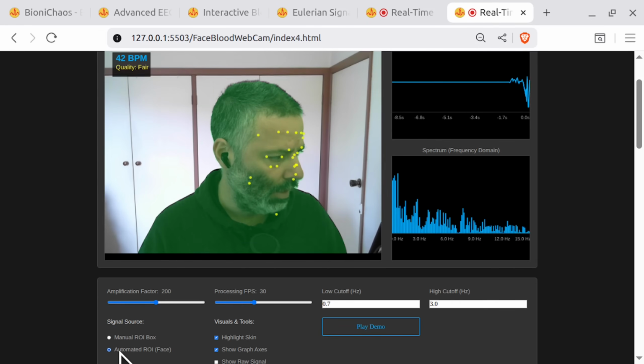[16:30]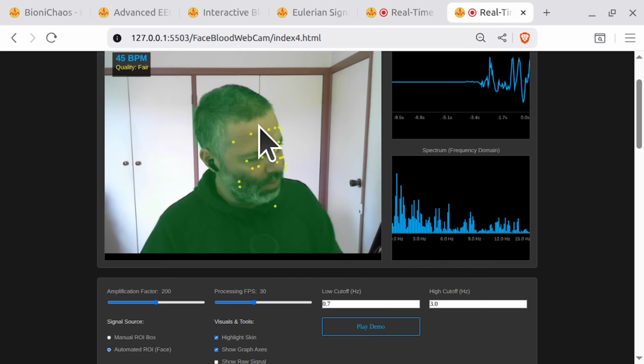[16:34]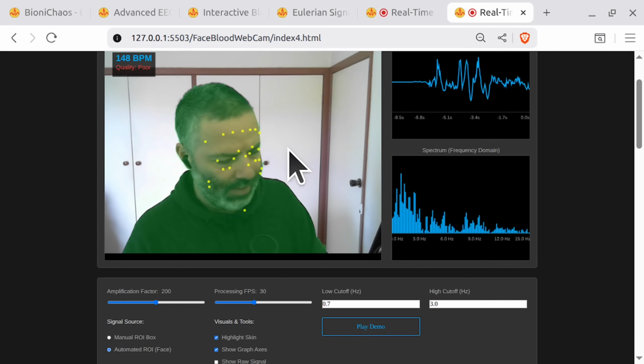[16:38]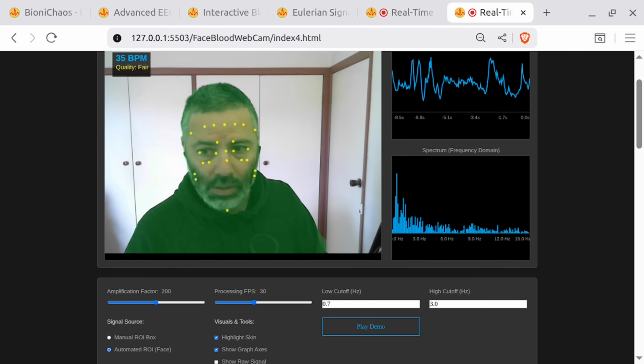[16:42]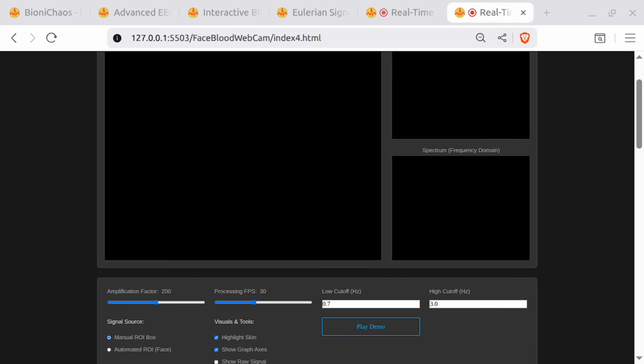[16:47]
I'm not sure if it's, so doing a manual ROI. Wait a sec, we wanted to actually revert a couple versions back because the automatic ROI stopped working. Revert. No. This one? Yes, yeah, the automatic, so it will detect your face. Now, it's meant to only select the points where your skin is, which is obviously not doing a great job at the moment. But it's probably the best version we've got.
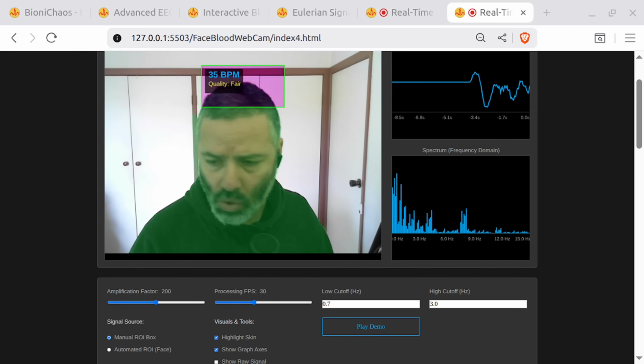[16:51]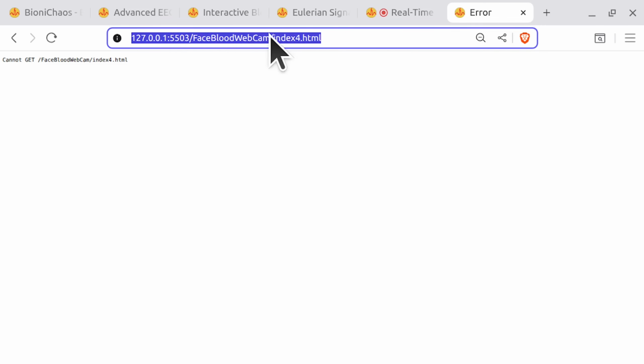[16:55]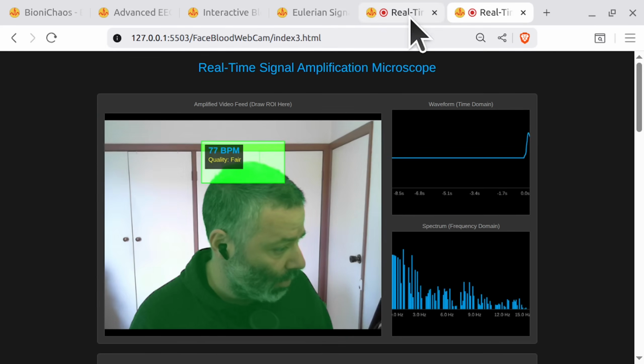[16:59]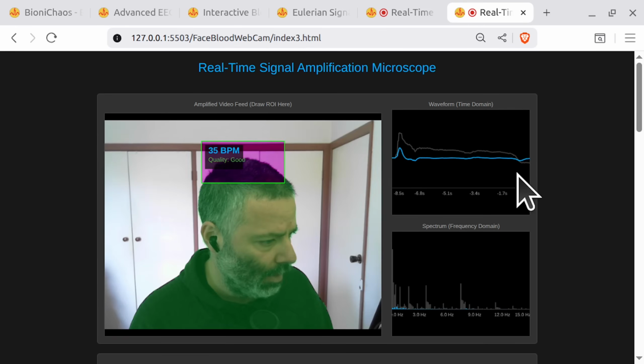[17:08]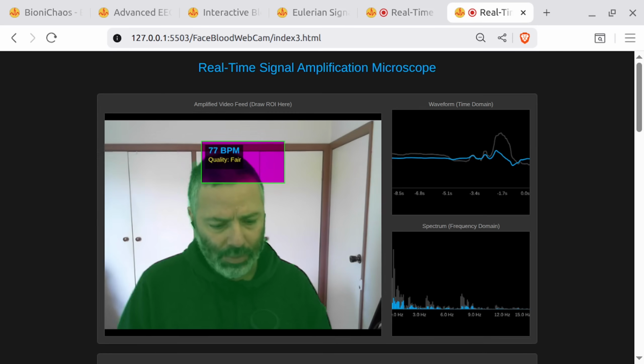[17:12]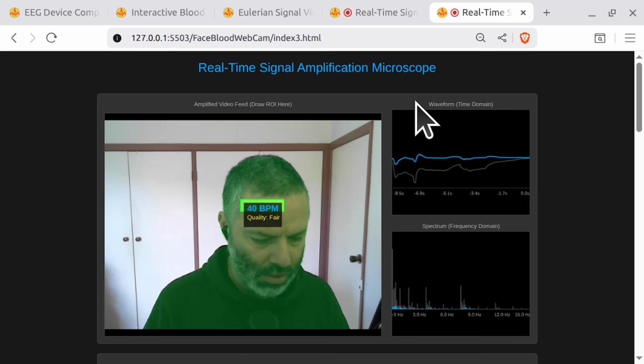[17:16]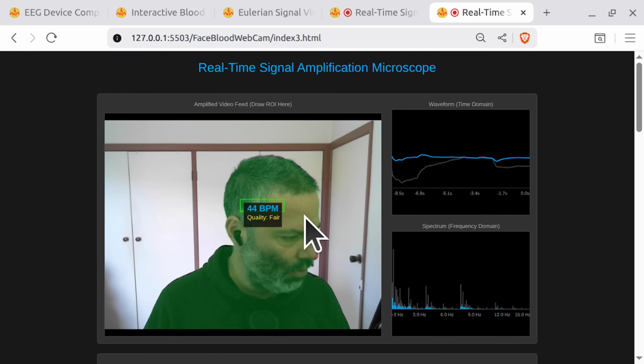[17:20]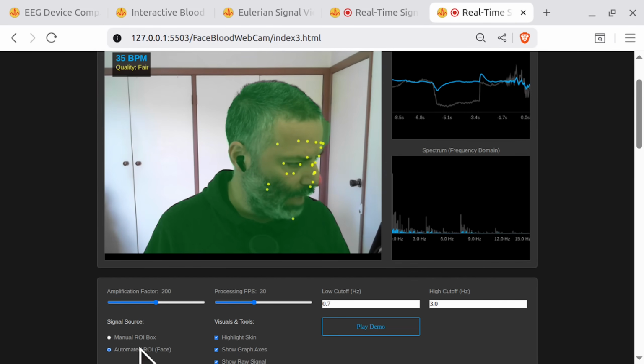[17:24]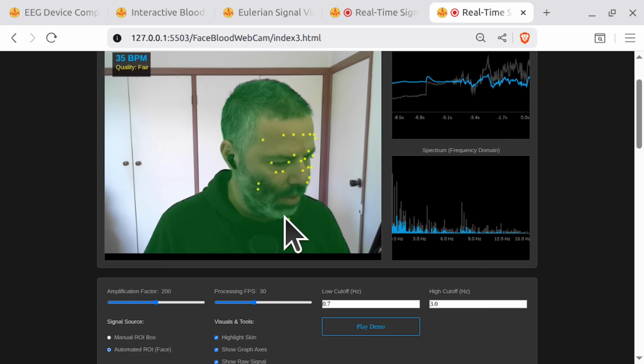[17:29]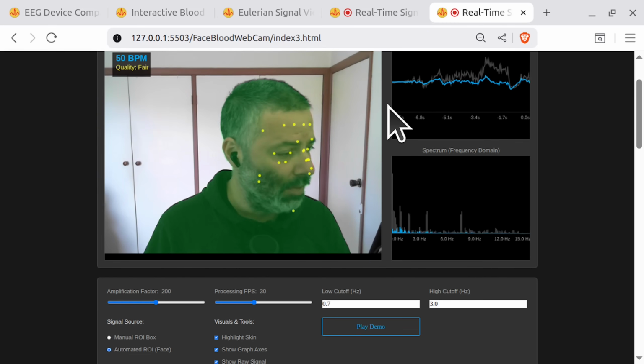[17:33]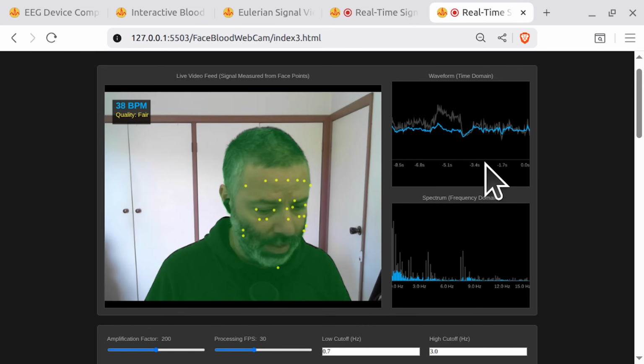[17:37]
This version 4. Just rename it. Yeah, version control. It's a bit of a pain. Yeah, show raw signal. We're showing the graph axis. So this is more like the development version. This thing that we were struggling with, to have an automated ROI, except yeah, the chin is off and the beard. So maybe if we shave, you get a better signal.
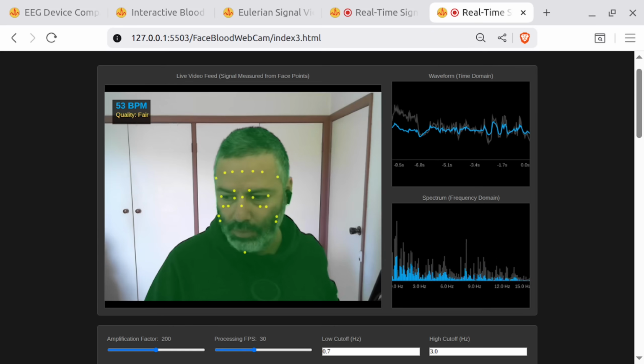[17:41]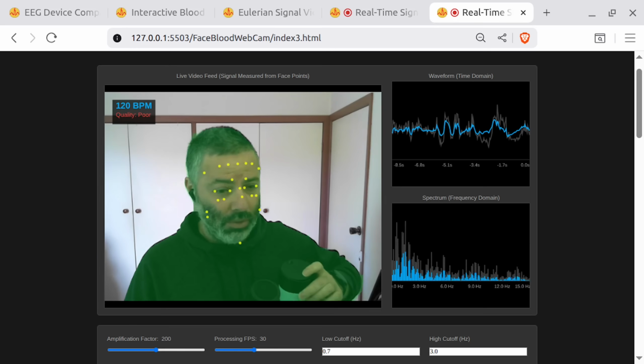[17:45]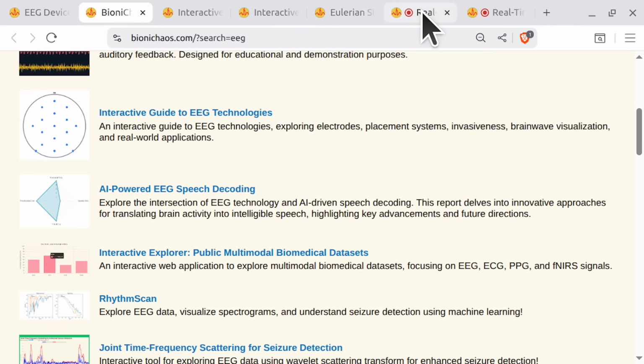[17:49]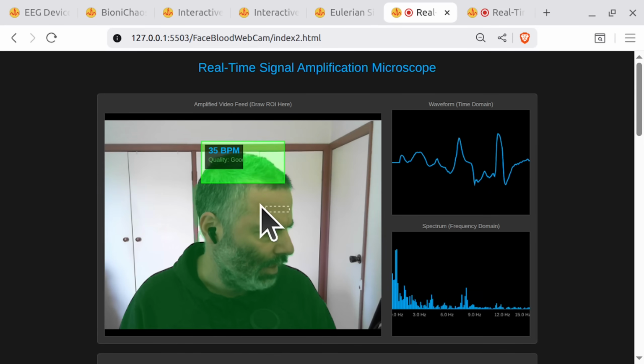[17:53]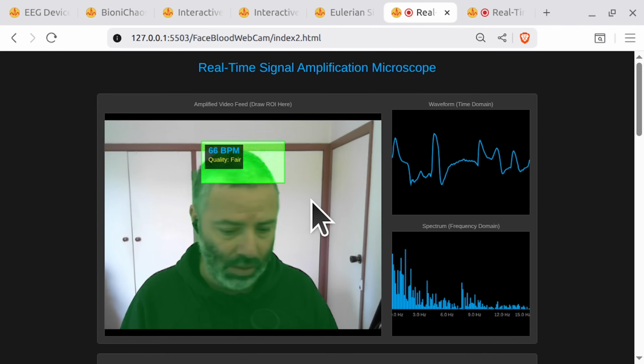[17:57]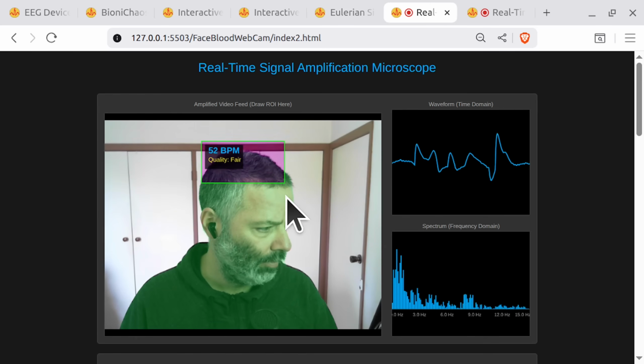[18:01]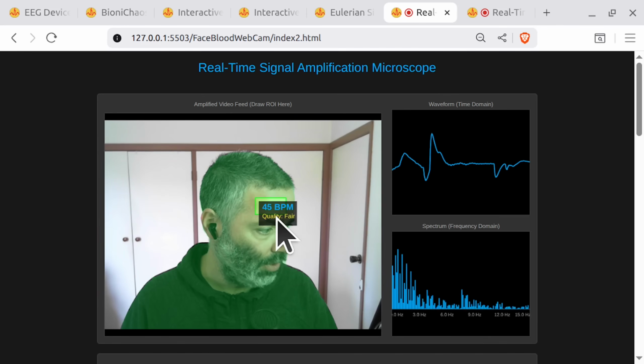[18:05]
So all these parameters will make a difference, make an effect. We'll try to improve it a little bit, but there would be a limit. Yeah, it's like this thing that we're doing at the moment. If you sit at the right angle, like now, you can actually get your heart rate. If the light is correct, you might need more light. If you select your region of interest, we're trying to automate it.
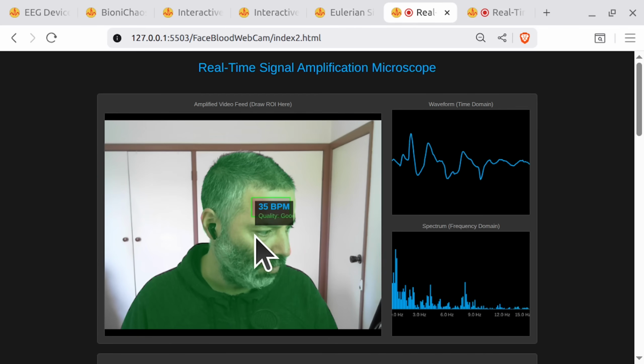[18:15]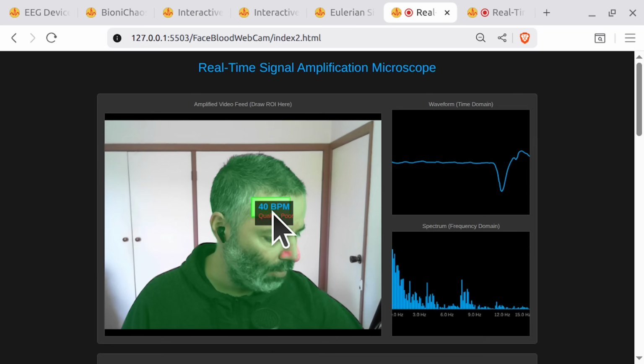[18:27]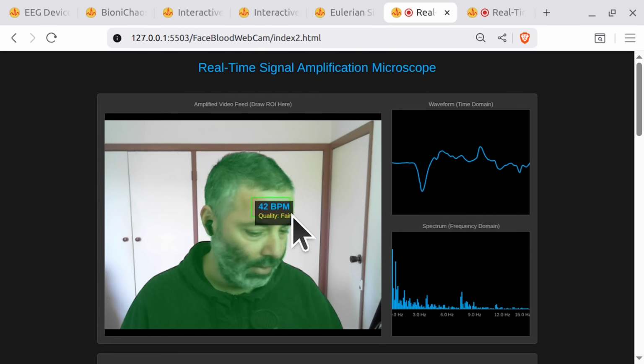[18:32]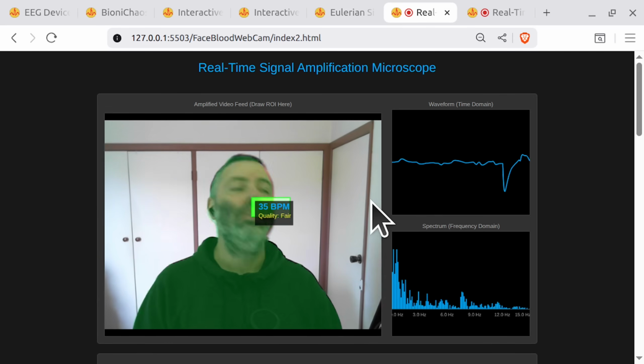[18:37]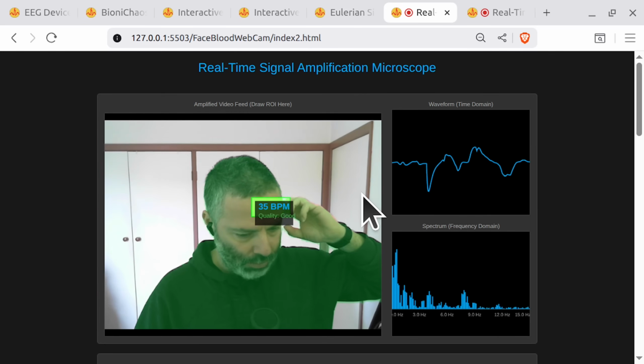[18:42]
And then if you don't move, don't talk, stop talking, you can get a higher quality signal. You can see that's the heart rate there. We get a correct measurement. It's actually 63, and it's 63 on my Garmin as well. Amazing stuff. But as soon as you move or do something funny, or the light in the room changes, then the signal quality drops to nothing.
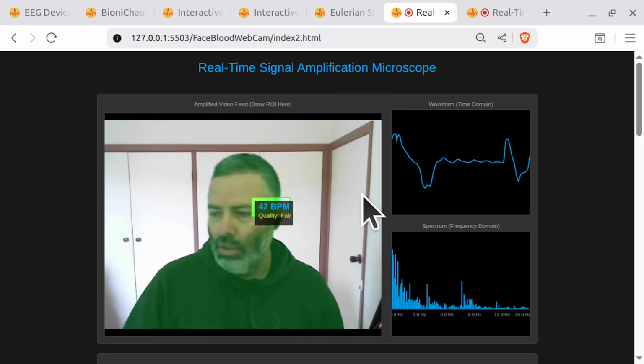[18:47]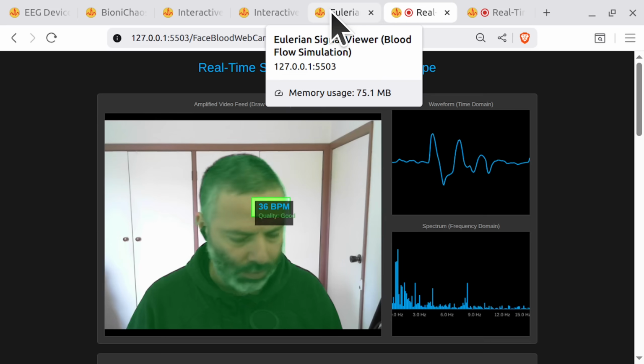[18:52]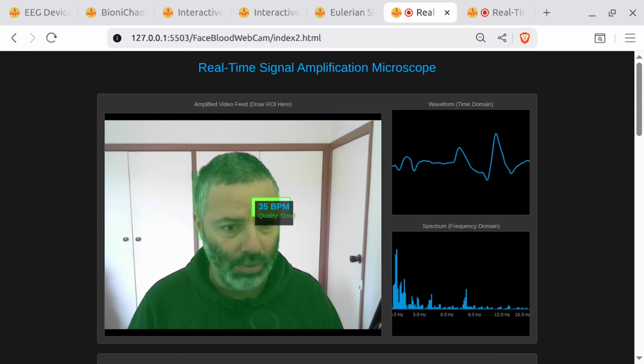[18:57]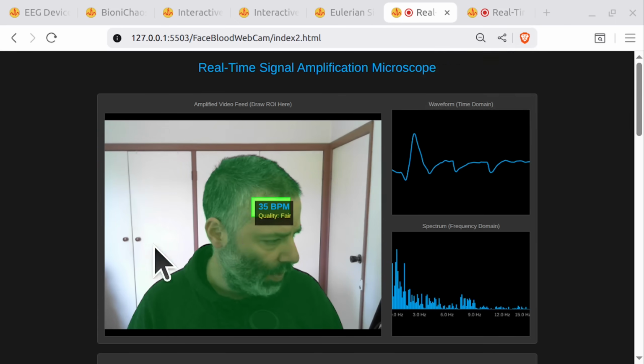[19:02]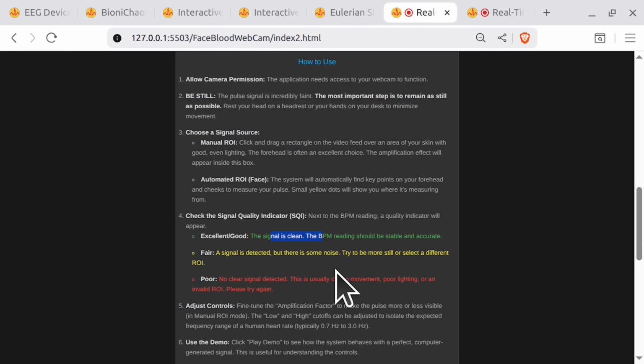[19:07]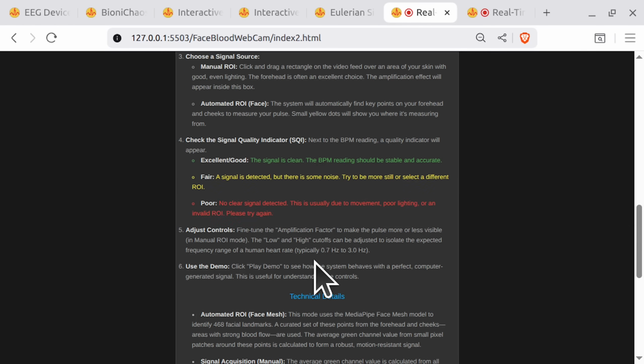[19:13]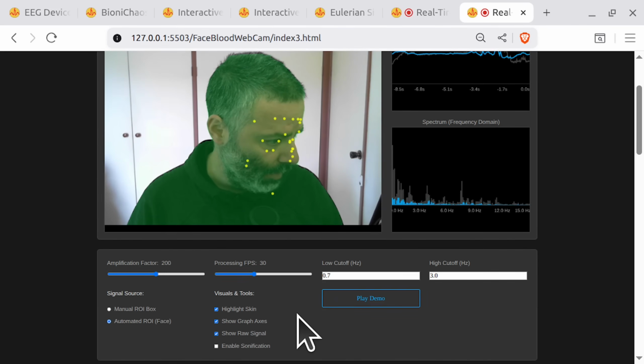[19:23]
So good luck to us all. Kind of stuff that you have to be aware of. And yes, we can improve some things. Yes, we will have some suggestions of what you can do. Do not move, this and that. Adjust controls. You can adjust the filter settings, but yeah, it will have limited effect.
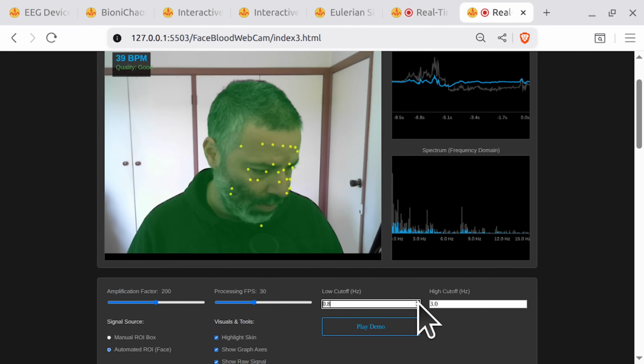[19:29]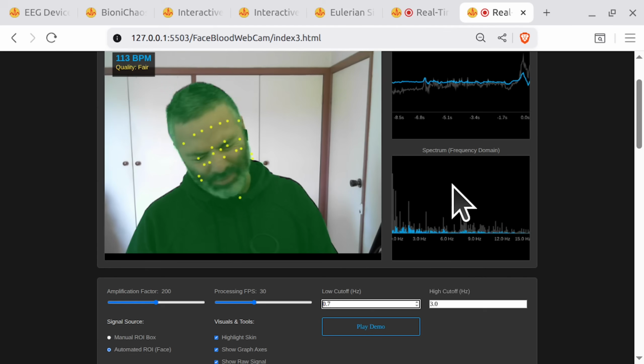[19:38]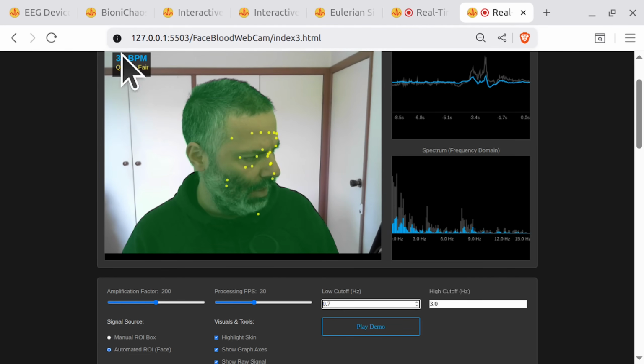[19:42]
I'm not even sure the filter is working correctly. I mean, it might be, it's probably working for the calculation of the beats per minute, but it doesn't work for changing the display, which is fine.
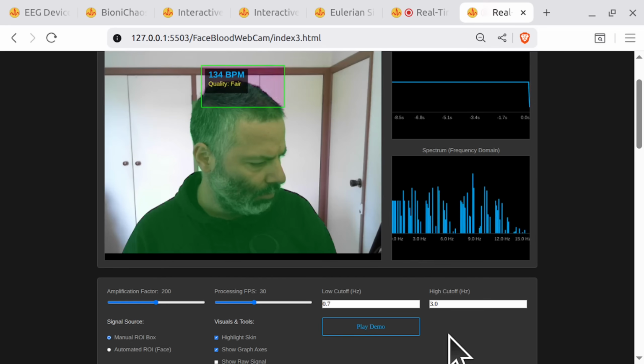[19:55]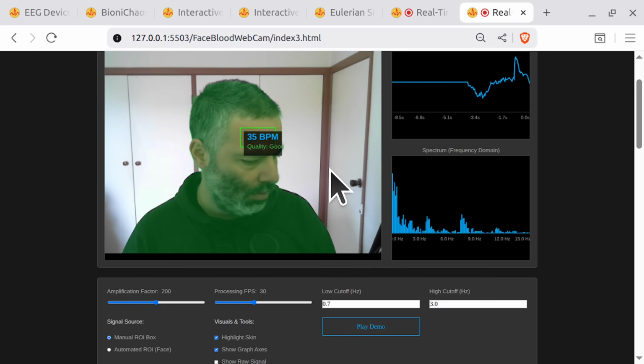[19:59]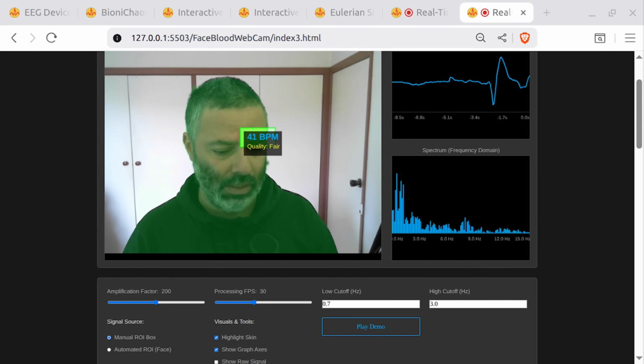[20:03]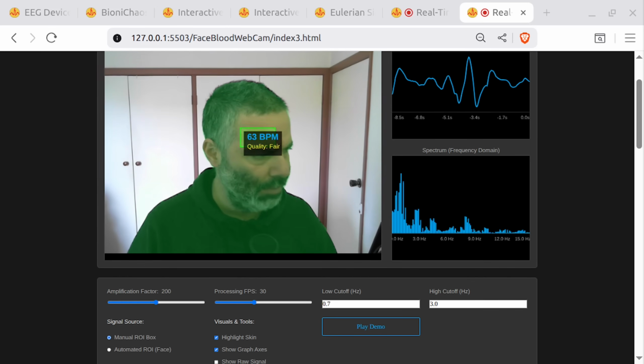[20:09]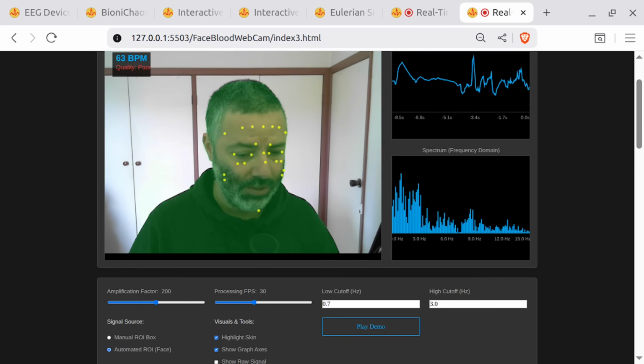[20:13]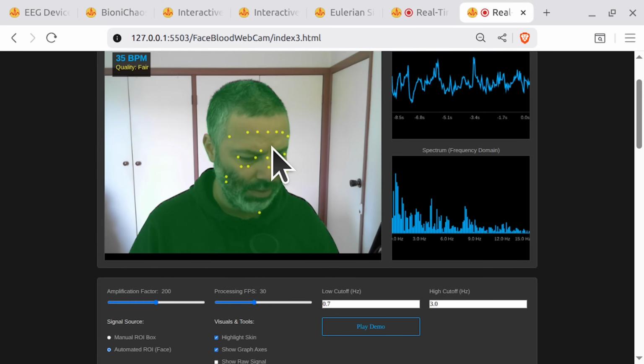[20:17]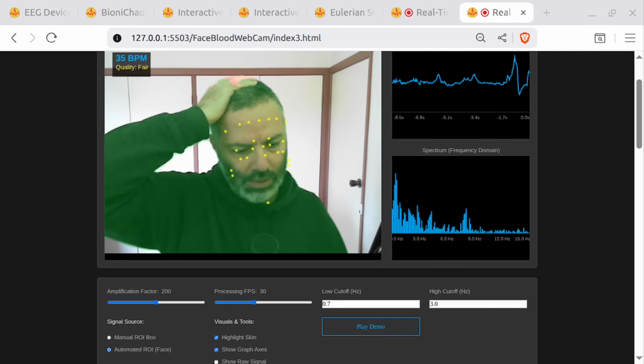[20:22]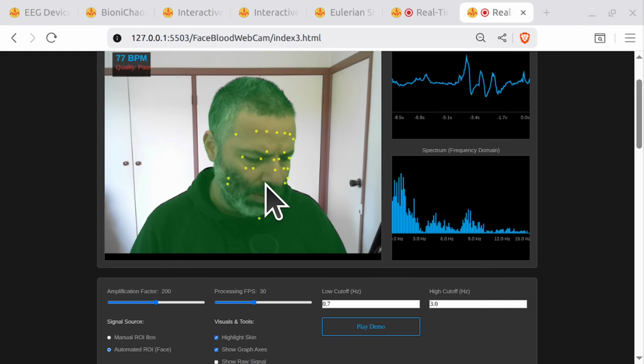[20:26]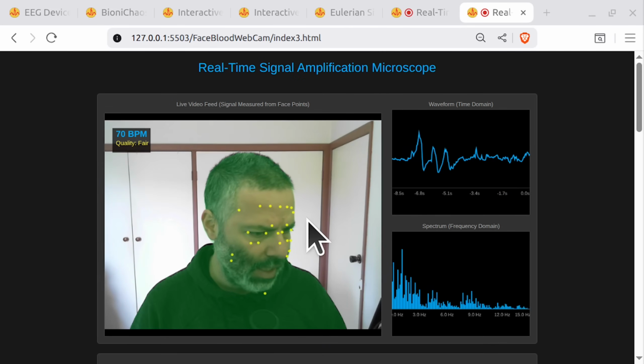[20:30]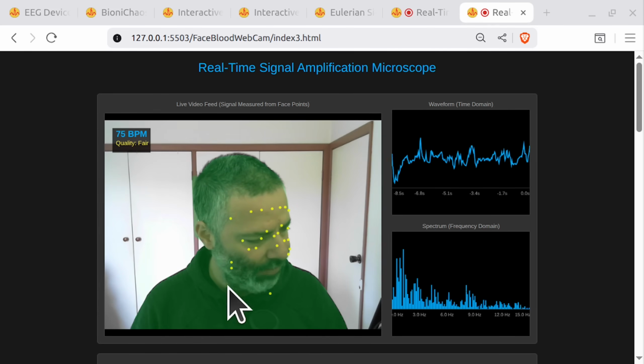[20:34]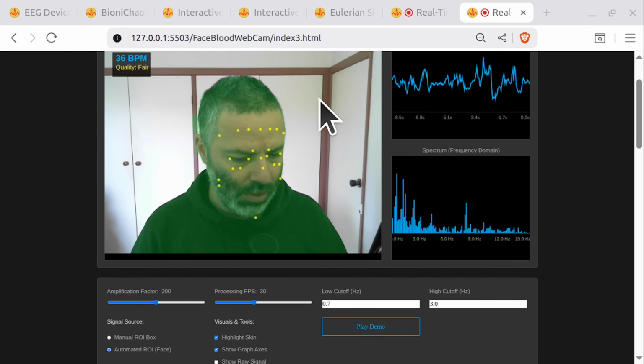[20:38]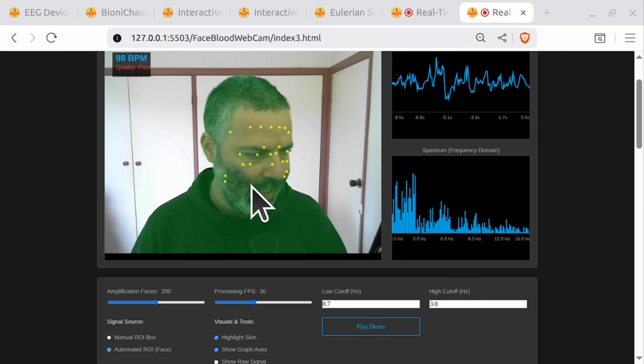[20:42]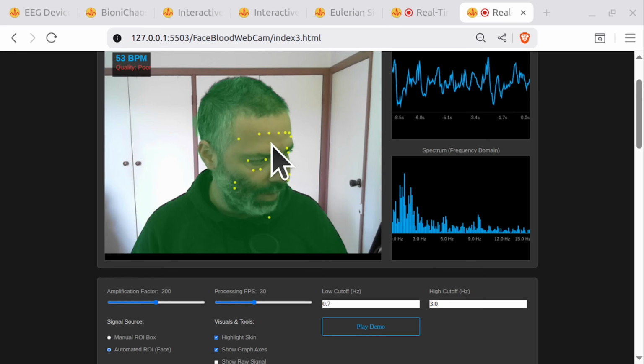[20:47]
And we have a highly experienced developer, so we can just ask them. We actually went to a previous version of the code. What's doing the eyes? Without modifying the code, can you just answer a few simple questions? First of all, are all the yellow dots used as ROIs? Another question: how would you go about it if some of them are over facial hair? How would you remove or filter those out?
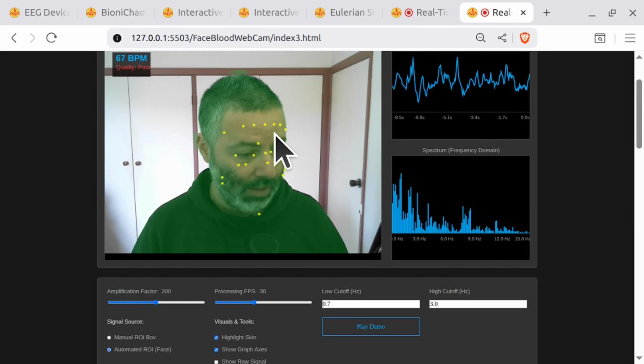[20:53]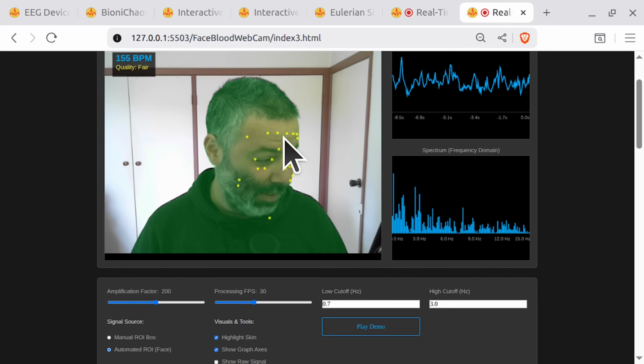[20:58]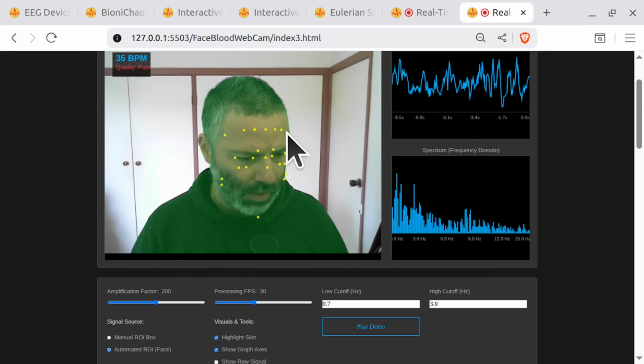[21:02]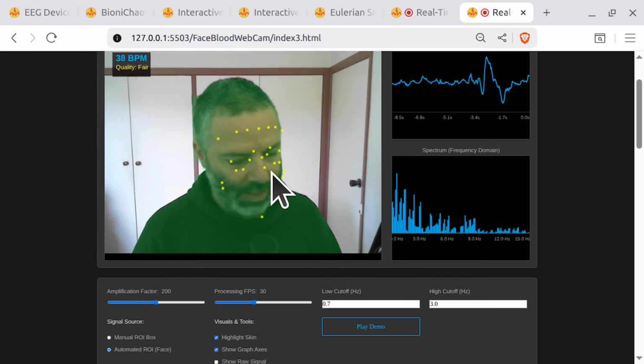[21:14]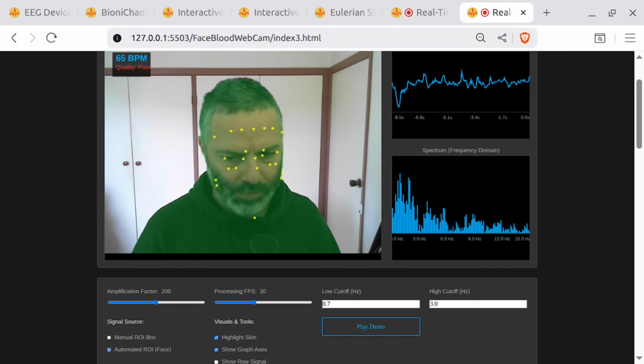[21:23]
Would you do it manually, or can we have something automated that will actually check the skin tone? Maybe we can select one of the yellow dots as for sure skin, or it can be automatically selected as the middle of the forehead. Hopefully we don't have any hair there, or if we do, it's minor. Then based on that point, we can filter out other points that are not in the same range of skin tone. How does that sound?
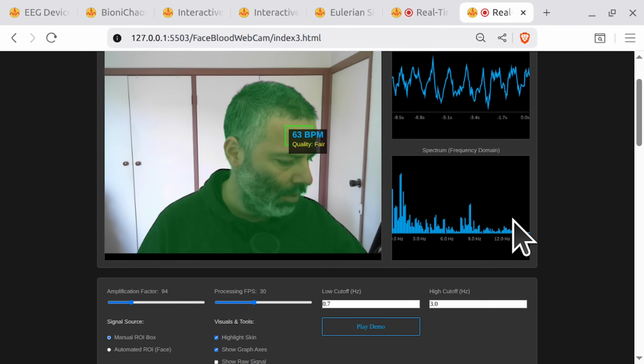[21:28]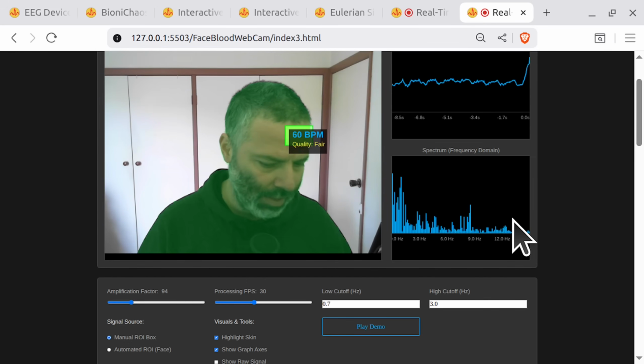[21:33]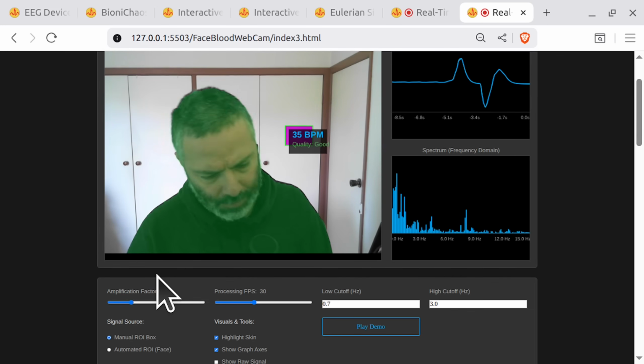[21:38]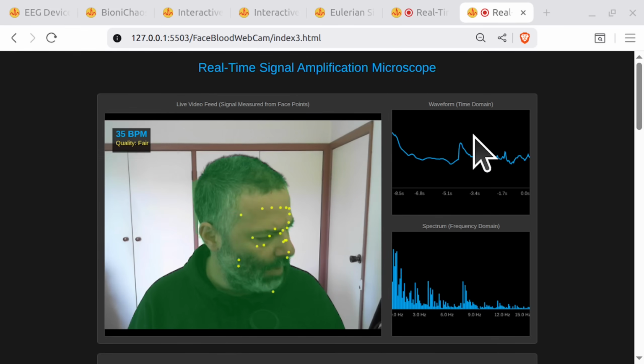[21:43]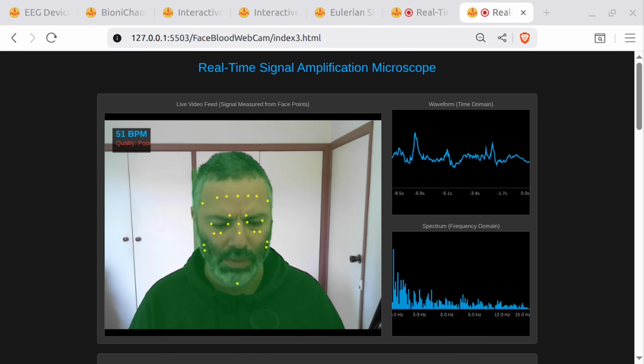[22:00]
Yeah, getting a good reading, 63 BPM. Mine is showing fluctuating around the same value, so it's pretty good. Maybe they need to change the amplification factor and things like that. But the main problem is that the automated ROI should be getting the same thing, but it doesn't. Can we just select the ROI? We can do it manually, can we?
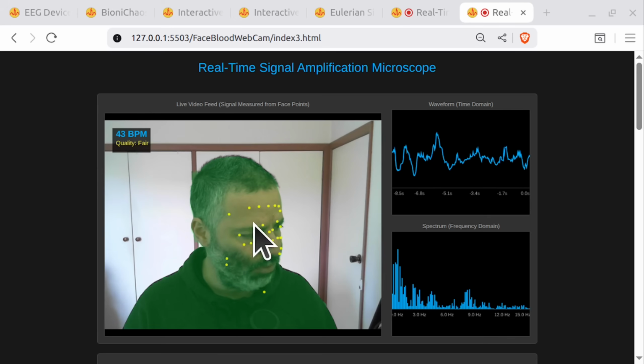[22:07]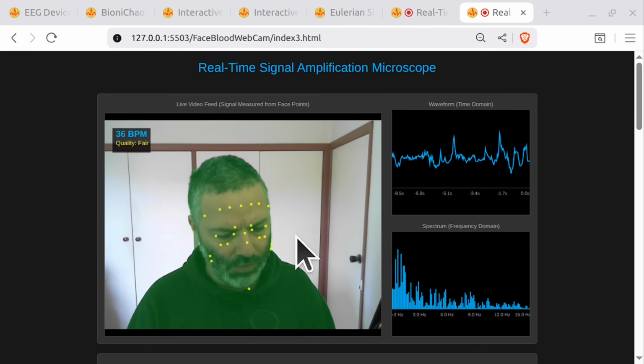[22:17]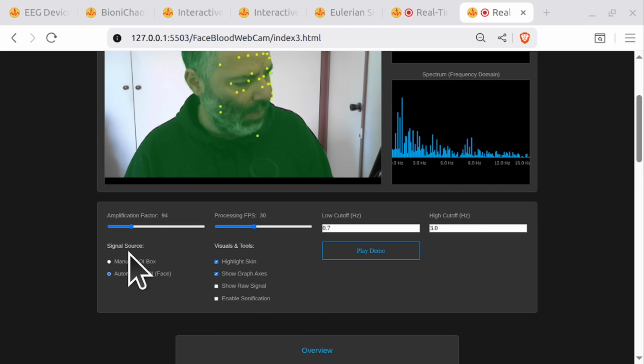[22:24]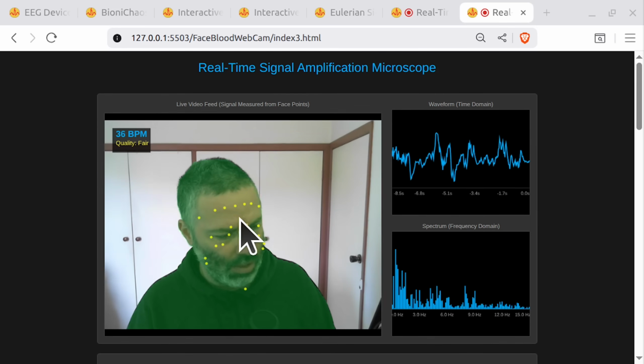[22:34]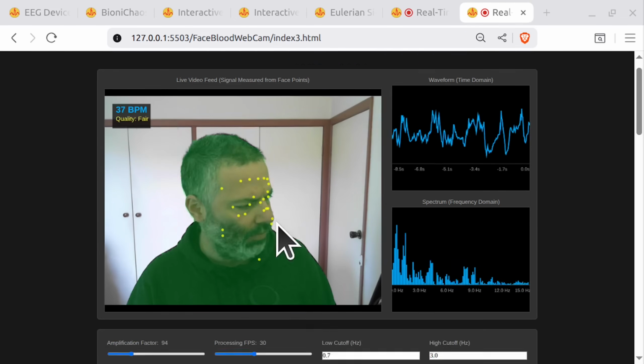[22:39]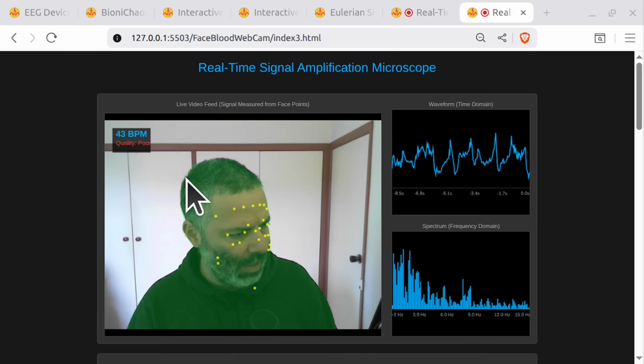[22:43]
First of all, some of the yellow dots seem to be over facial hair. Some of them seem to be at the edges of the eyes. Are those correct? They don't seem to be correct. Can you suggest an improvement? Essentially, what I'm trying to do is replicate the results with the manual region of interest box selection, which gives me a good BPM reading. But with the automated ROI selection, I'm getting rubbish. That's essentially what the problem is.
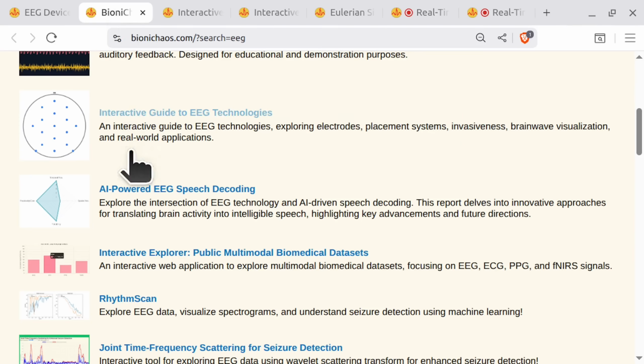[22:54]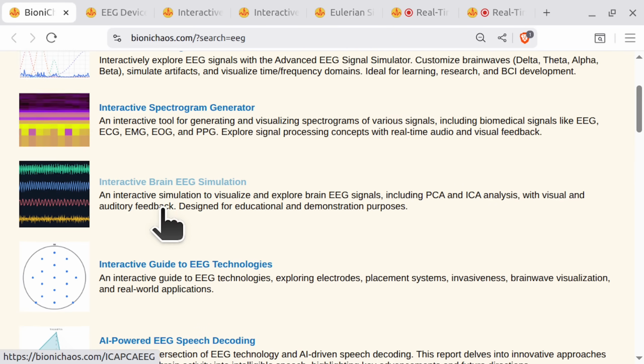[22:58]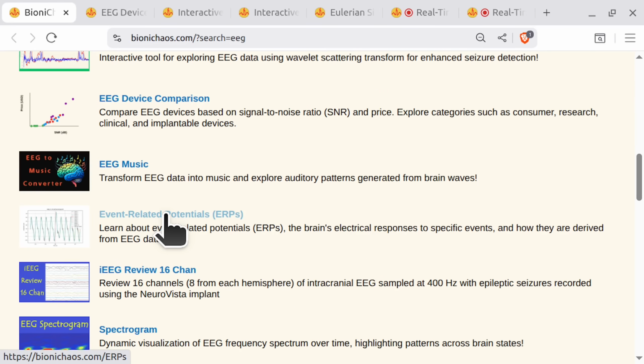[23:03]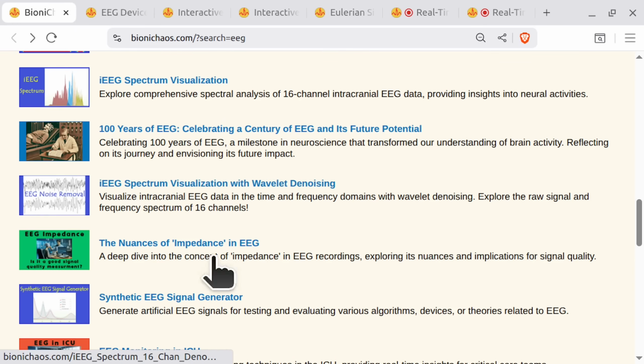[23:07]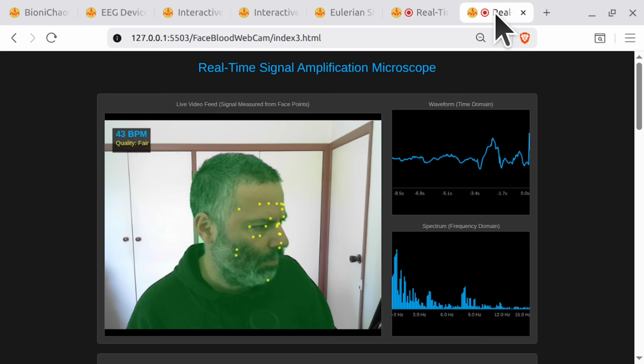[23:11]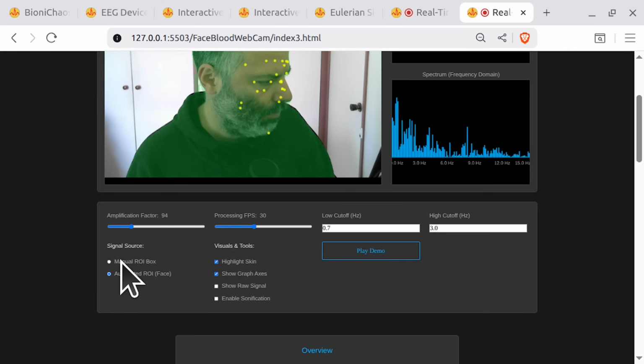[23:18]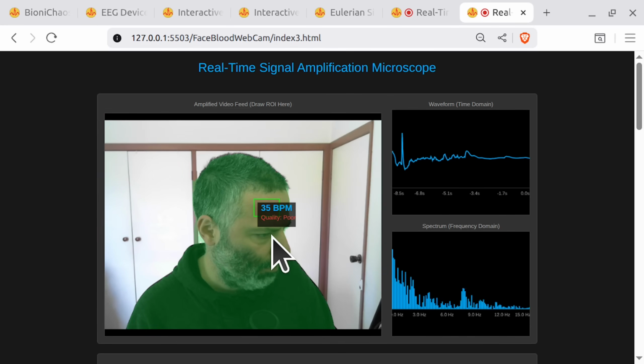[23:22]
Yo, Zik, you've been staring at that pulse tracking app for 10 minutes. Are you trying to see if you can lower your heart rate by sheer force of will? I'm trying to understand the little yellow dots. They flicker all over my face like tiny caffeinated fireflies. Are they all ROIs? Is each one sending a tiny report back to headquarters saying, yup, he's still alive? Barely.
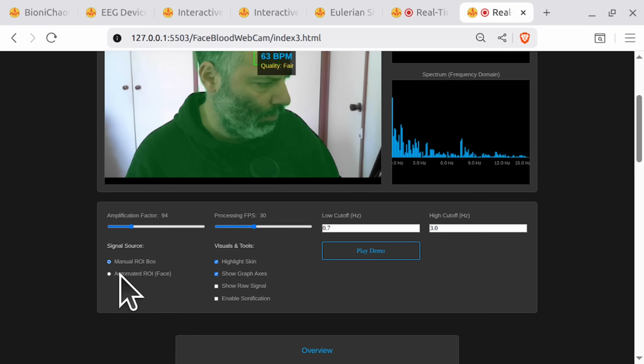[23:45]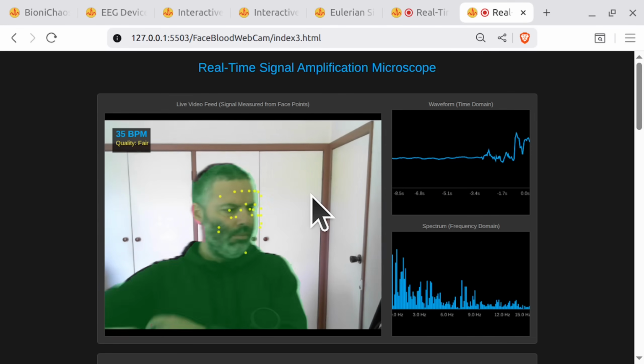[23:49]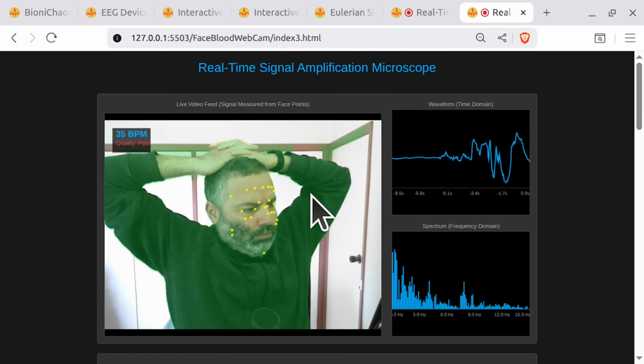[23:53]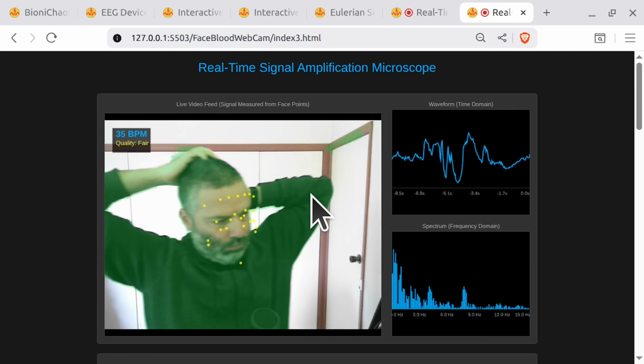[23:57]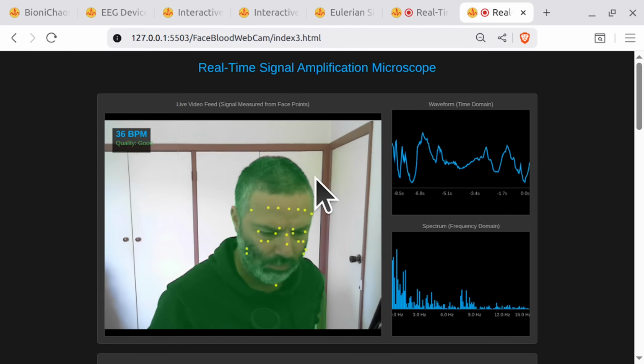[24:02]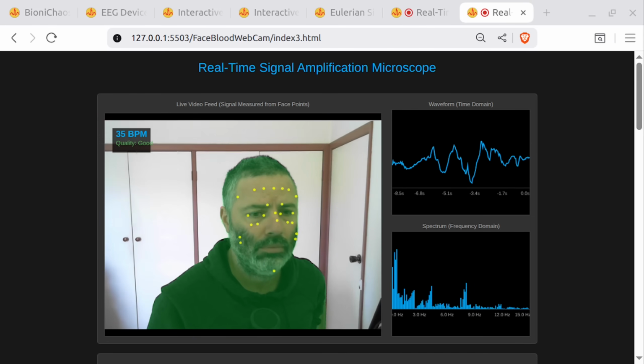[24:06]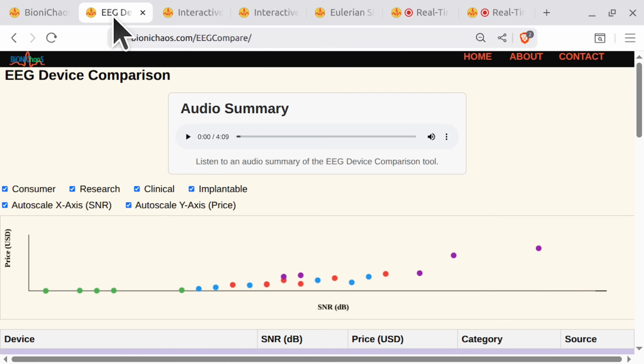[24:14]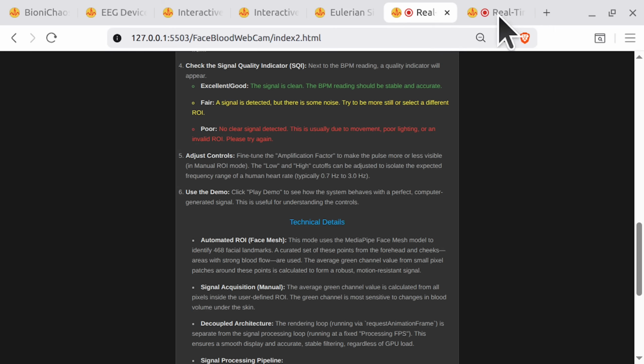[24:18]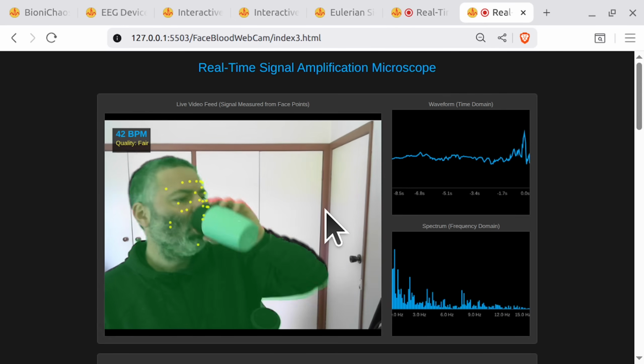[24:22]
Not quite. That's the first and most common misconception. Think of it less like a team of reporters and more like a casting call for a very exclusive movie. A movie called My Forehead's Inner Monologue? I'm listening. Exactly. The code has a list of about 20 potential candidates, ideal spots on the forehead, cheeks, nose bridge where the pulse signal is usually strong. But on every single frame, it holds an audition. The yellow dots you see are the ones that pass the audition for that specific moment. They are the survivors. Survivors of what? My terrible lighting? My existential dread? Close. Survivors of the "Are you actually useful" skin test.
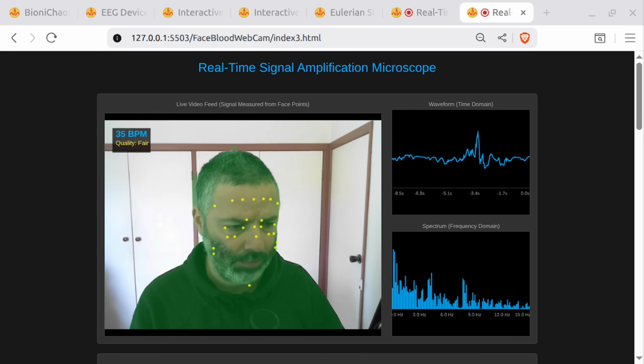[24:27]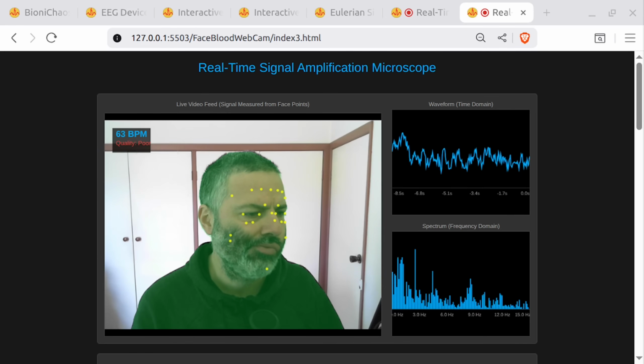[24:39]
Which brings me to your next question, which I can see forming in your clever comedian brain. You know me too well. My beard. What happens if one of your star candidates, let's call him Cheekbone Charlie, decides to audition from under my glorious, signal-blocking facial hair? Does the app just trust him? He seems honest. Let him in.
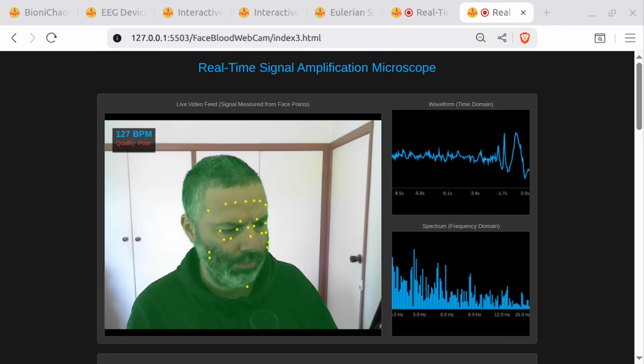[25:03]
Ah, the facial hair problem. That's where the real magic comes in. The app is running two AI models at once. The first one finds the face and the candidate landmarks, our hopeful actors. The second one, selfie segmentation, acts as the bouncer. A bouncer? I love it. Does he have a little earpiece and a velvet rope?
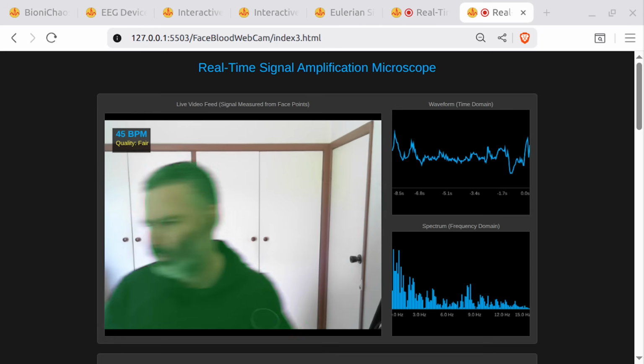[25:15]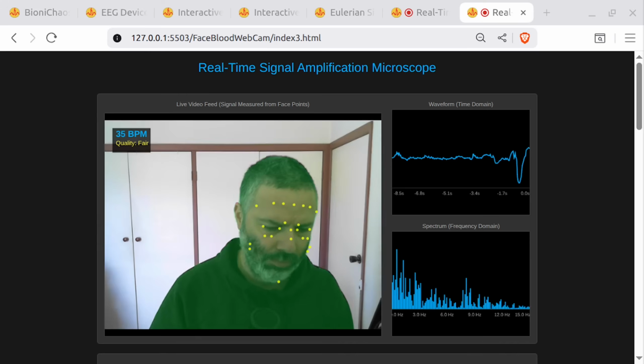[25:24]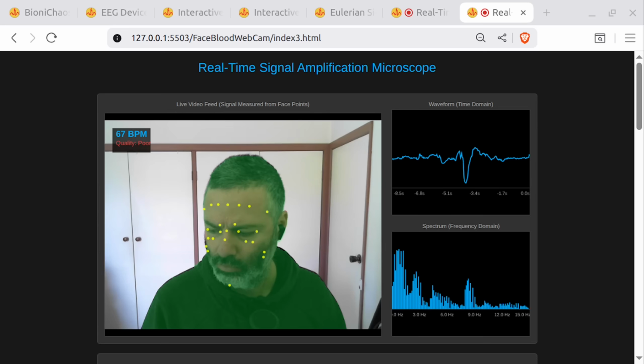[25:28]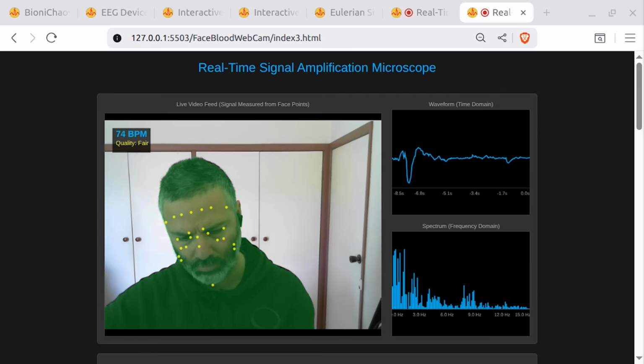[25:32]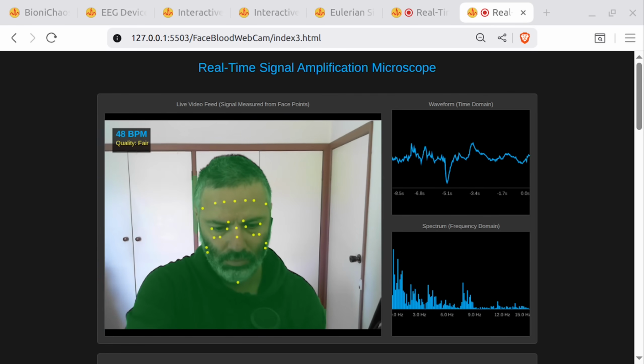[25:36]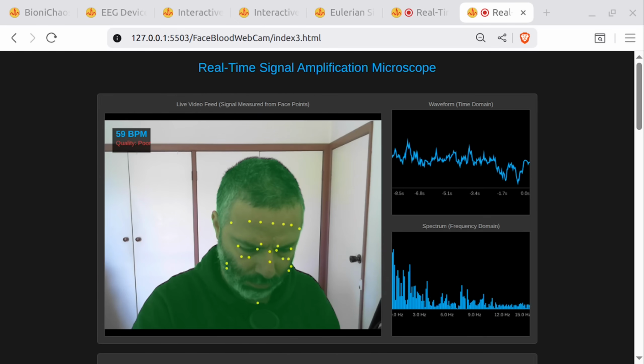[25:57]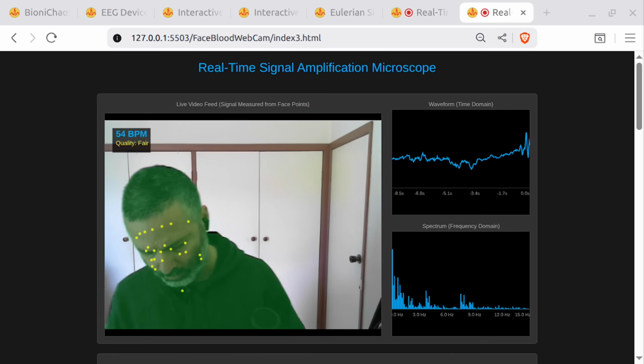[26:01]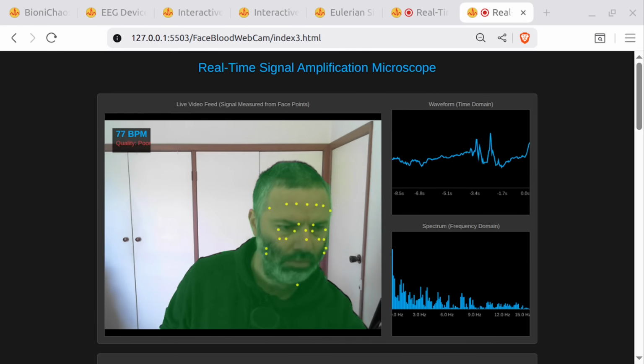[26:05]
Metaphorically, yes. The Bouncer AI creates an invisible, super detailed skin map of your face on every frame. It's like a ghostly stencil that knows, with very high confidence, this pixel is skin, this pixel is beard, this one is the frame of his glasses, and this one is the hair flopping over his forehead. So it's a digital ghost with a PhD in dermatology. Precisely. Before Cheekbone Charlie gets his data used, the app checks his location against the bouncer's skin map. If the map says confirmed skin, Charlie's in. His green channel data gets added to the average. If the map says, nope, that's a follicle forest, Charlie is unceremoniously thrown out of the club for that frame. He doesn't get to be a yellow dot.
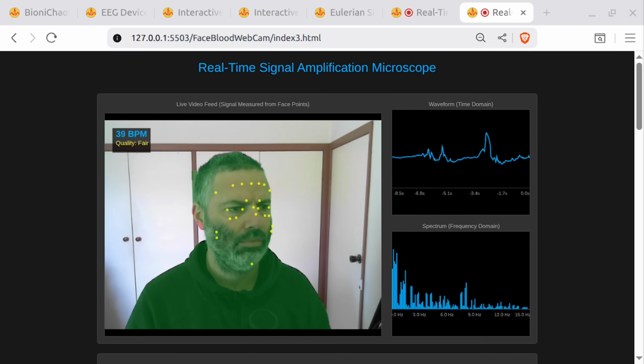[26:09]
So the system is automatically ghosting the hairy applicants. That is brutally efficient. I respect it. But wait, I just had a brilliant idea.
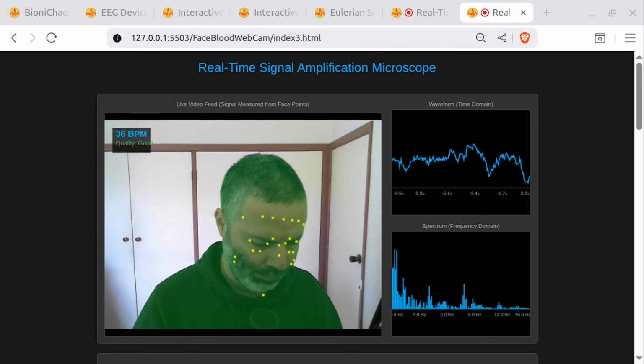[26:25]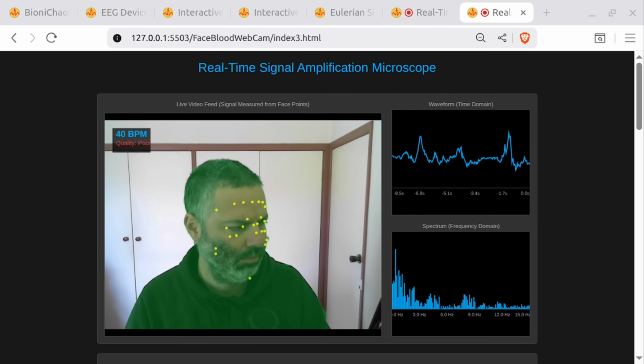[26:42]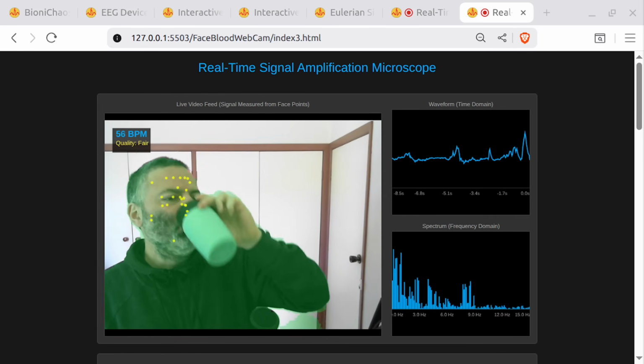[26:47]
I'm gonna save you all this AI mumbo jumbo. Oh boy. Go on. Why not just do it the old school way? Like with the paint dropper tool in MS Paint. You click on a definitive 100% skin-colored spot, say the very middle of my forehead. The computer saves that color. Then it just tells all the other little dots, okay team, you're only allowed in if you're this specific shade of Yosic beige. Filter out the beard dots because they're the wrong color. Simple. Am I a genius?
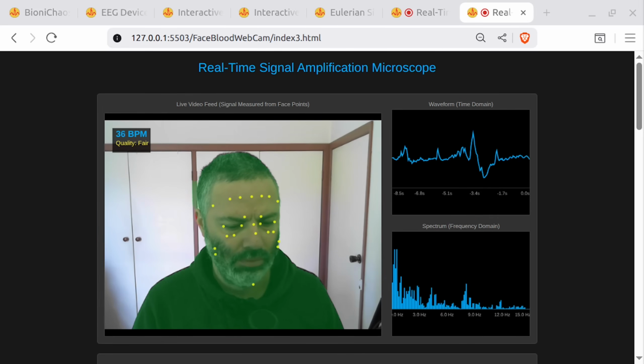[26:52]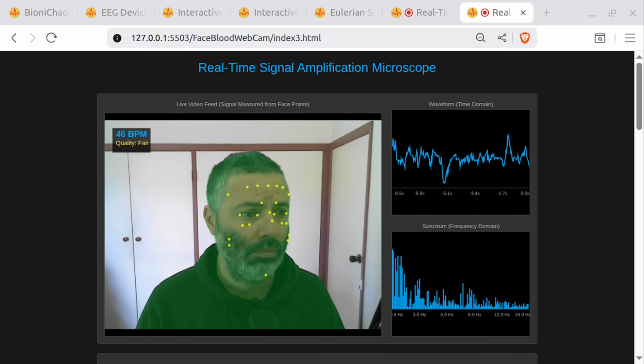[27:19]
You're a very clever comedian who just reinvented a classic computer vision technique called color segmentation. And it's a great idea until it's not. What do you mean, until it's not? Okay, stay perfectly still. Now, just lean forward into the light a little. See that? The light hits your forehead differently. The shadow on your cheek just deepened. Your Yosic beige is now 10 different colors. Your paint dropper system would just have a panic attack and fire everyone. My brilliant system is foiled by a 60-watt bulb.
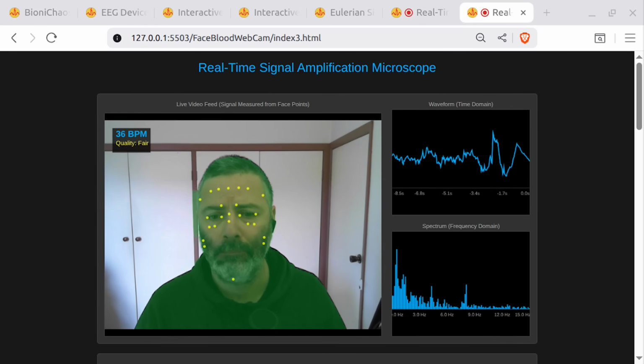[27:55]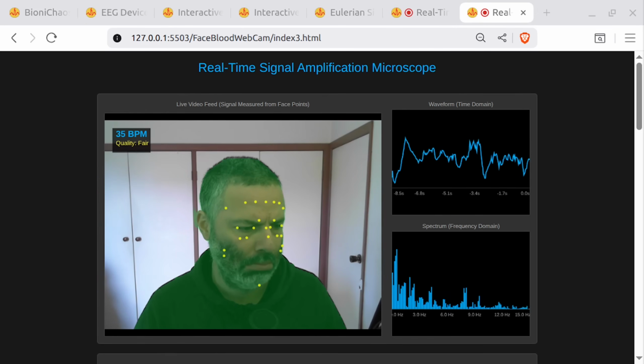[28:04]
Exactly. The AI bouncer, on the other hand, is smarter. It's been trained on millions of faces in all sorts of lighting. It doesn't just see color. It understands context. It knows that skin in shadow is still skin. It knows the texture and shape of a beard is different from skin, even if the color is similar. Your method is like a guard who only checks if your shirt is blue. The AI guard recognizes your face, checks your actual ID, and knows you're not supposed to be wearing a fuzzy mask. So my idea is a colorblind security guard, and the app is using a psychic, all-seeing super bouncer?
That is the best summary I have ever heard. It's not a democracy where every dot gets a vote. It's a highly exclusive, AI-powered nightclub for only the most legitimate, well-lit, non-hairy patches of skin. Incredible. I feel so validated. At least parts of my face do. The rest have been rejected. I'll have to have a word with them.
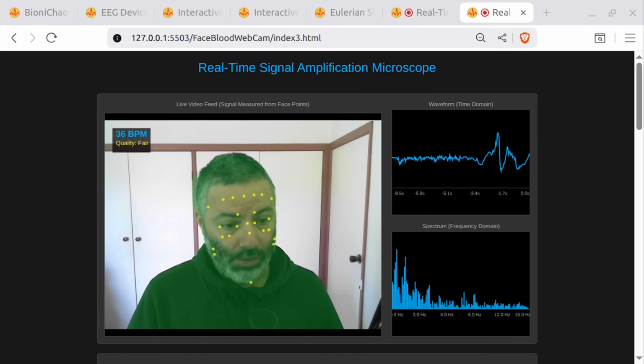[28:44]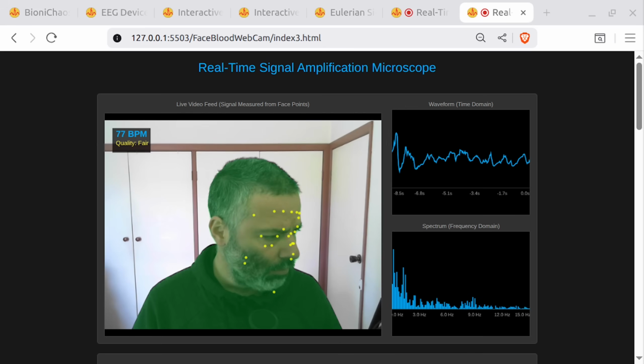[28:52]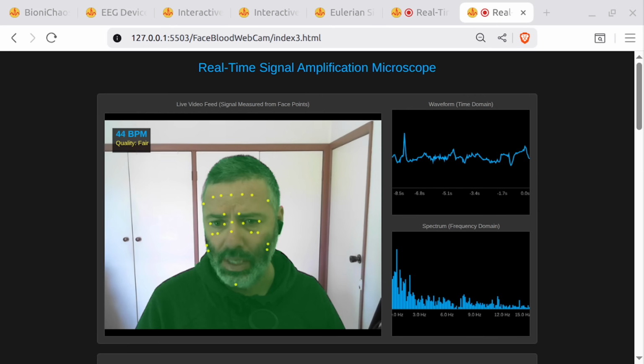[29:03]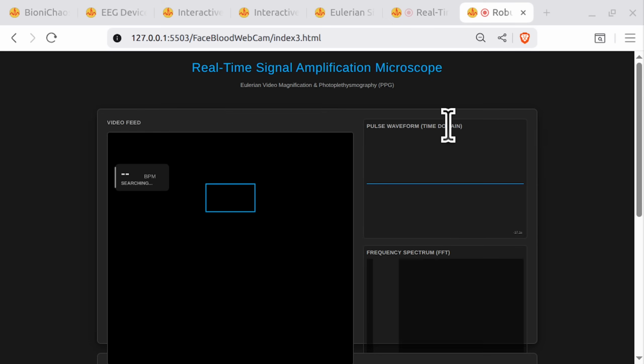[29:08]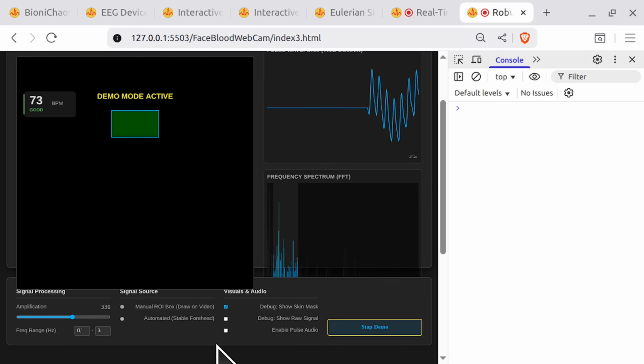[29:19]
Okay, that's just based on the question we asked. Then we had some other ideas. So we have now a version of it. We'll have to test first if the manual ROI still works. Oh, this is much longer code. Yeah, it made something way more complicated. The filter works better. Well, that's how it should work.
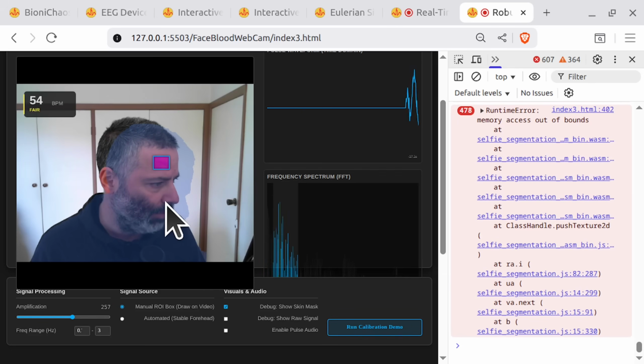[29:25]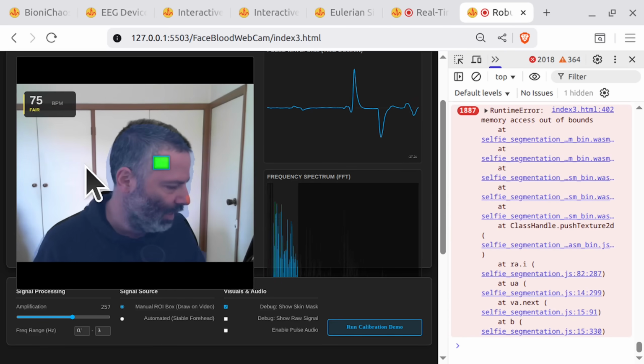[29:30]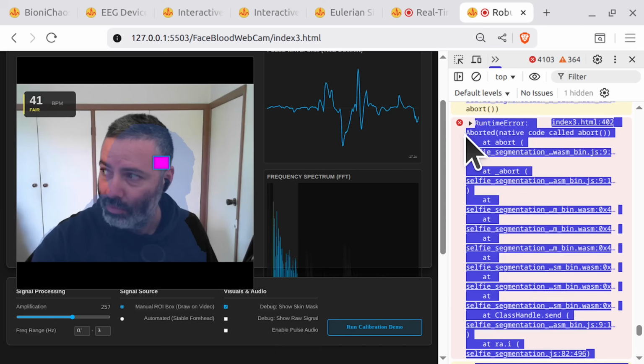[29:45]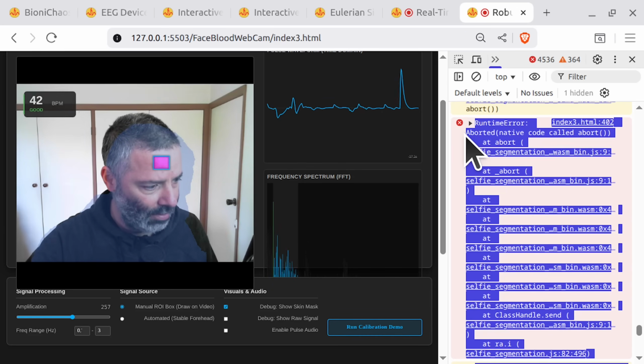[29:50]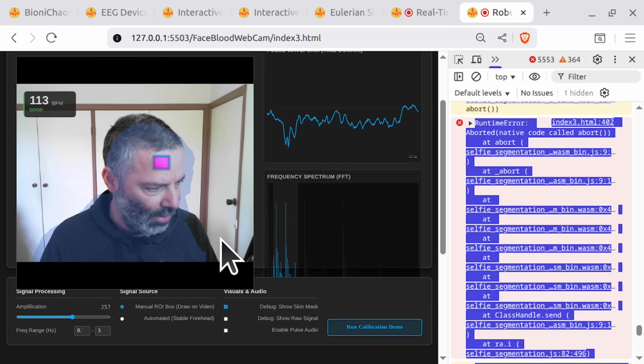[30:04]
Okay, that's actually loaded something. Memory access out of bounds, what? Does it tell me to go back into that position? It would be hard. Keeps giving me errors. I like how the filter works. You can see the light is actually changing stuff. Got rid of the frames per second selection. I think it's 30. It feels like 30.
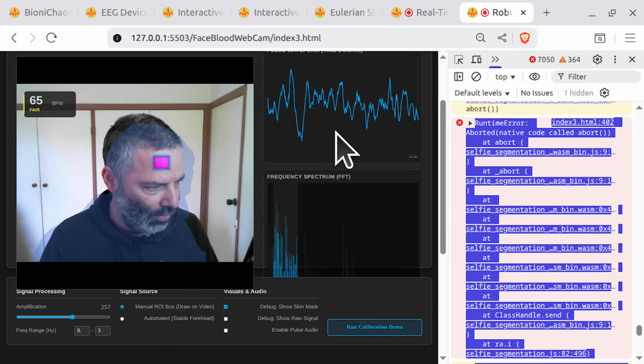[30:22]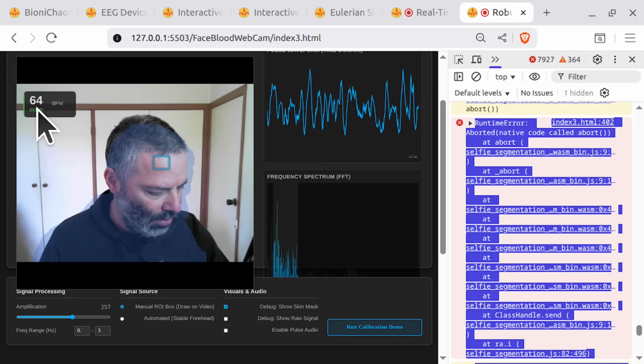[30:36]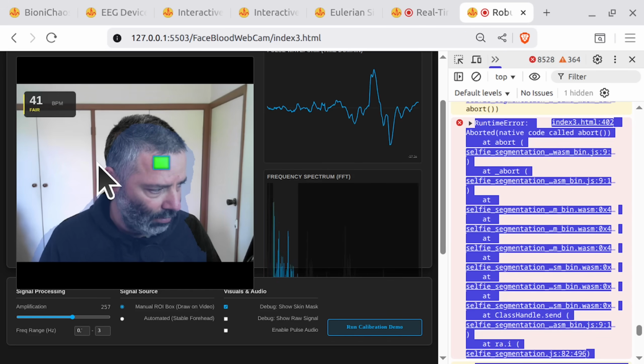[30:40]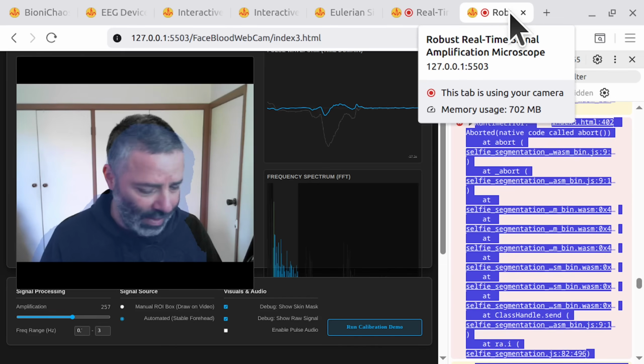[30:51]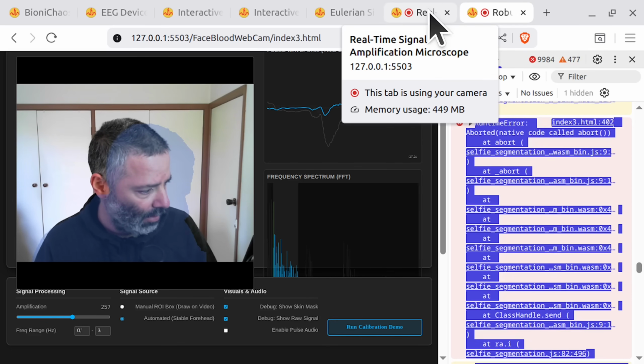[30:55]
The green jumping between two. Okay, what happened there? Looks like a filter artifact of some sort. It's gonna give me good recording. It should stabilize on one peak there. 60 BPM. Looks good. It's 57. Yeah, now I keep moving, so it's a lot to show. And the main question is the automated thing working? Oh, it's 700 megabytes in the browser.
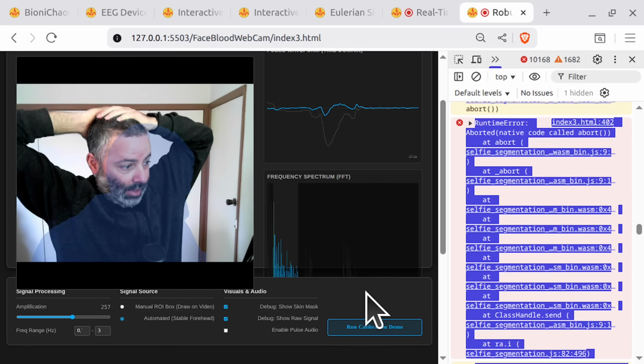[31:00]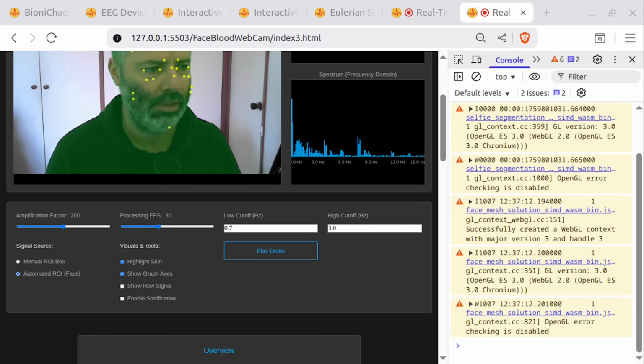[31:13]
What is it doing? It's doing something overly complicated. Overly complicated nonsense. It's implemented safe zone, forehead only, replaced by the broad list of facial points. 10 points on the forehead, okay. Increase skin confidence threshold, okay. Added a motion stability filter. Oof.
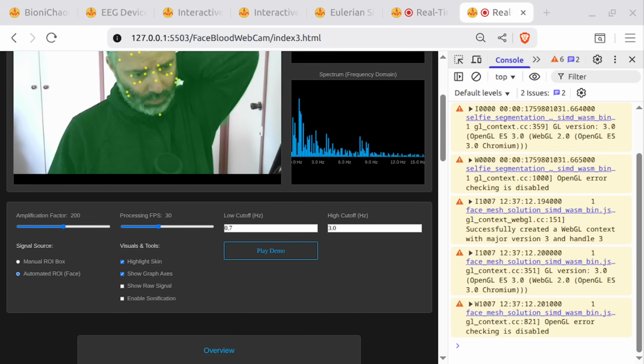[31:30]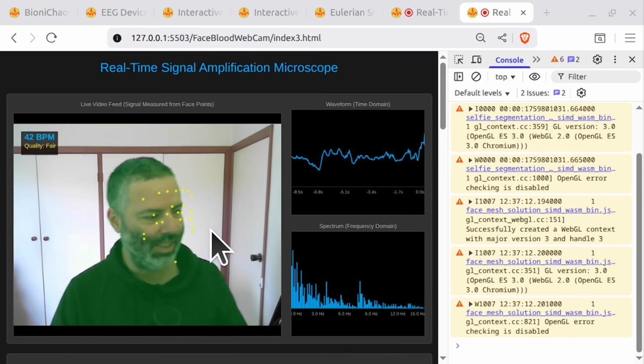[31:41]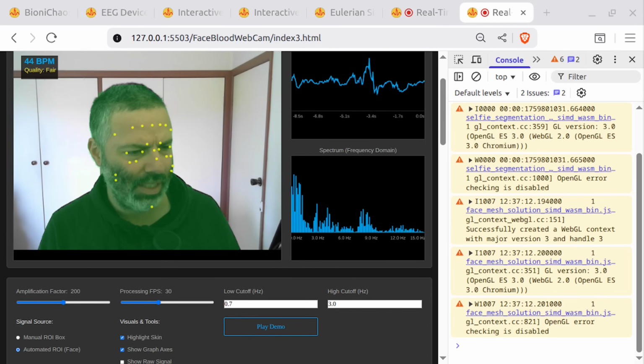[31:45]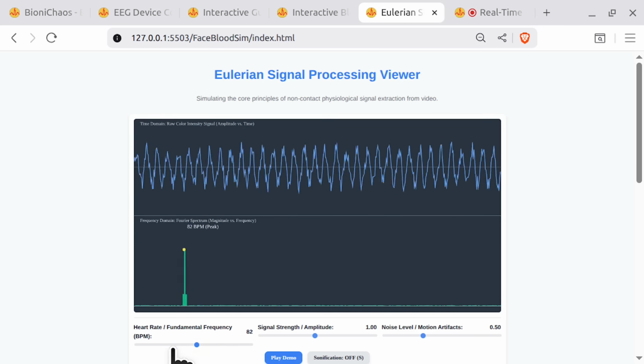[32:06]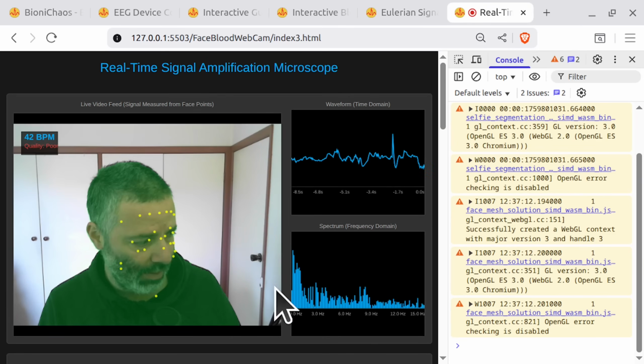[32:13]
It actually gave us two options, but the second option didn't have the code. Let's generate the code. Yeah, let's. Complete standalone HTML. Stricter skin confidence. Okay. Motion stability filter. It all sounds really good. Would it actually work? It should ideally look like this. In reality, we get the very noisy signal.
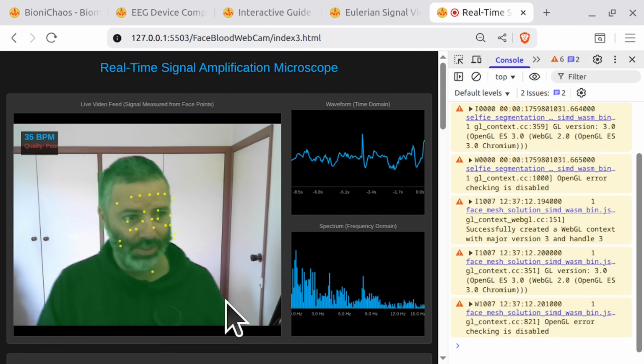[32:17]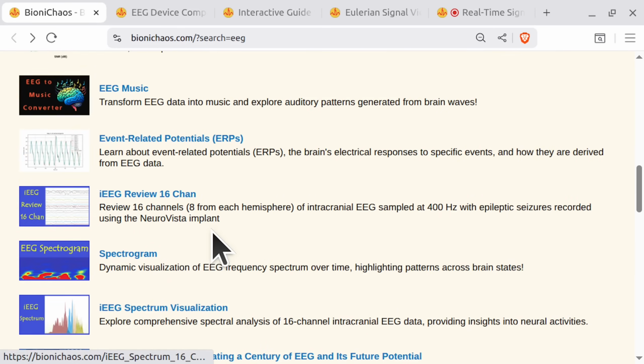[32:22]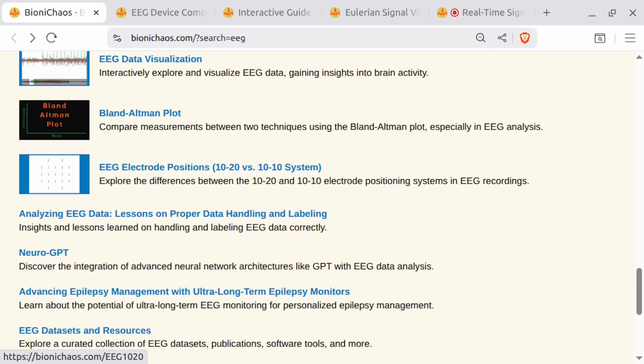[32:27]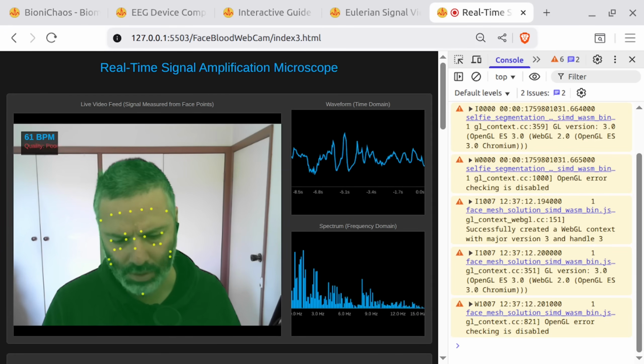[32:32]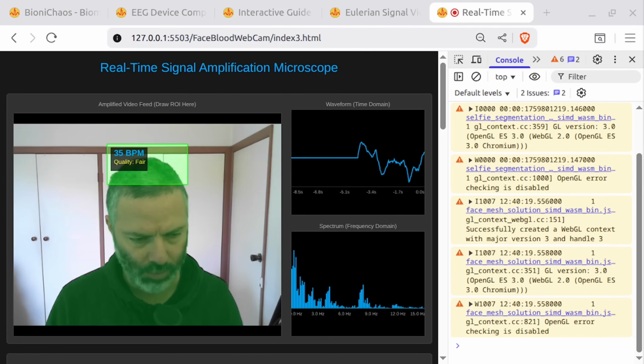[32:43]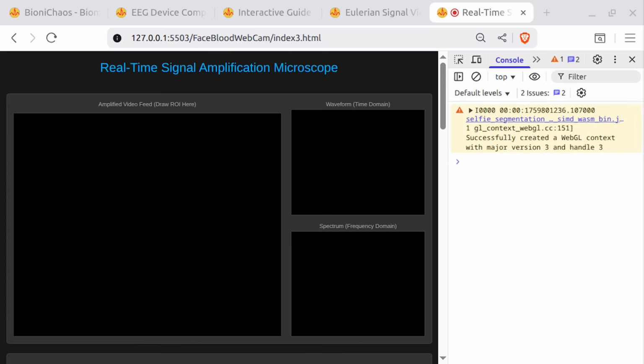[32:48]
And we have versions of this deployed. Everything we do eventually deployed on BioniChaos.com. Go check it out. Provide your feedback. Okay, we have a version. Another version of the whole code. This will be version 5 or something. Do we actually have it? Yes. Version 5, here we go.
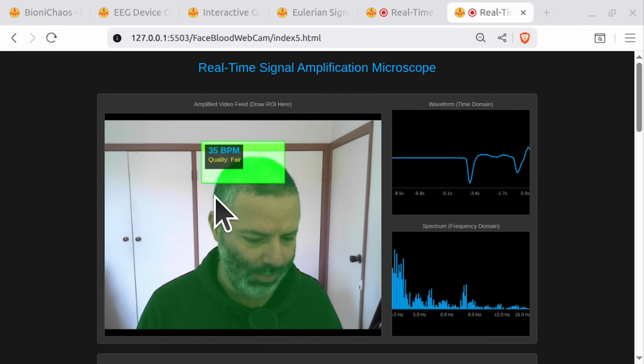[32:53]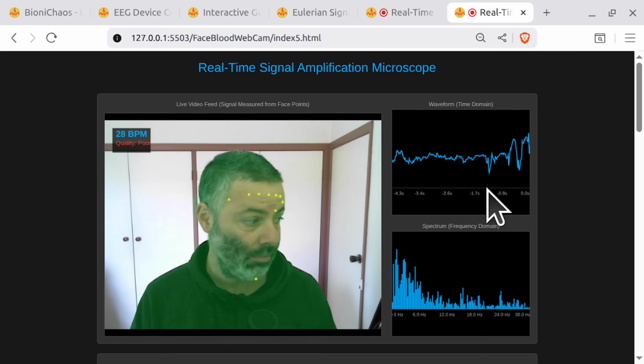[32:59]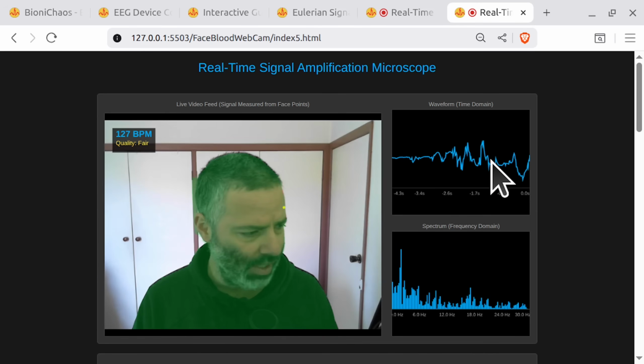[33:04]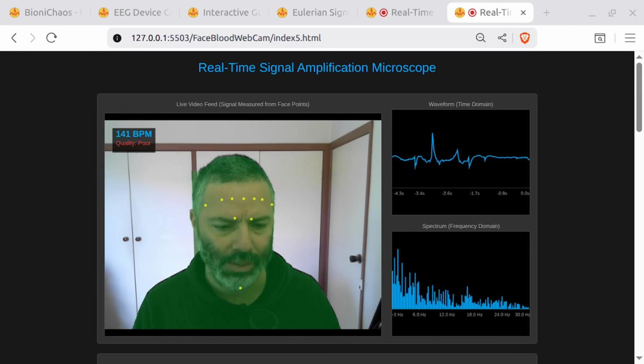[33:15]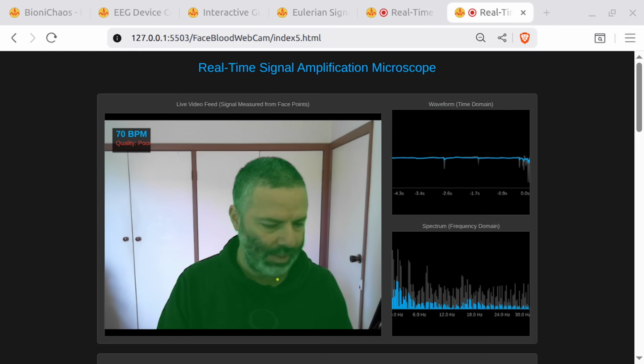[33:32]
Okay, so let's assume the manual ROI box works. These ROIs, the selection of the ROIs is not great. It's doing some automated stuff. Automated ROI can do FPS of 60. Can show the raw signal as well. What's the one on the chin? It shouldn't be there. And the quality is poor. No, just some noise. Just noise.
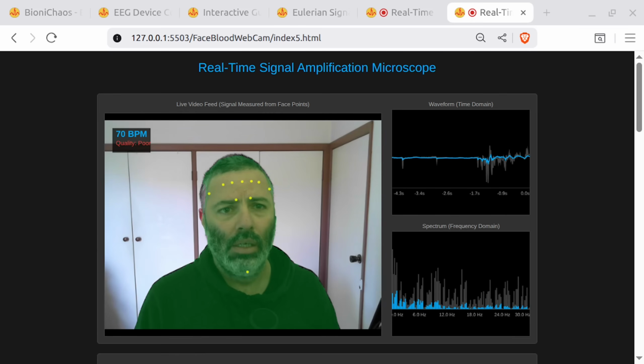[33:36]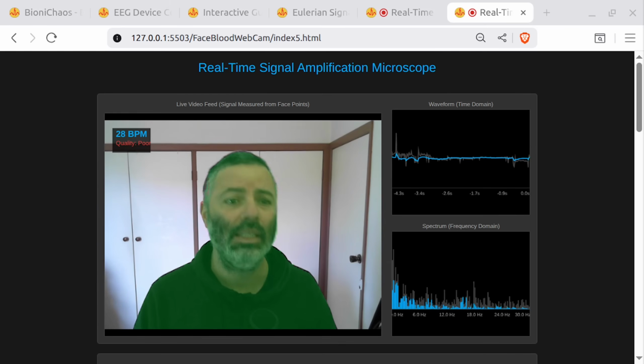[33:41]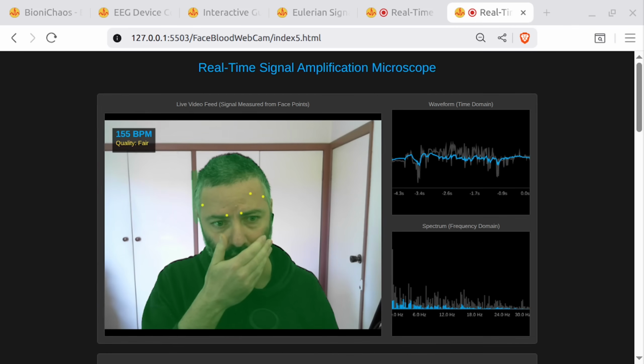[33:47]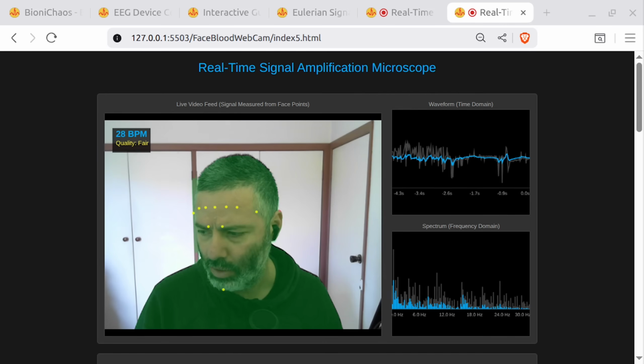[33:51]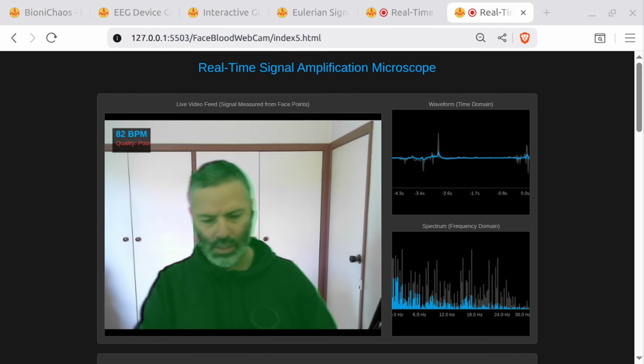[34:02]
Oh, come on. It's automatically selecting. I don't know what it's selecting. Selecting something. We don't need the chin one. What happened to? We don't need the chin one. It's super weird. Super weird.
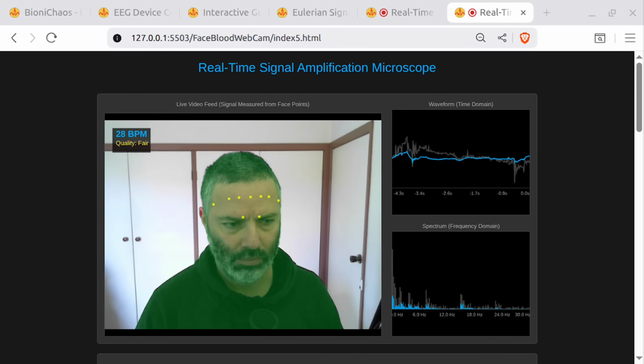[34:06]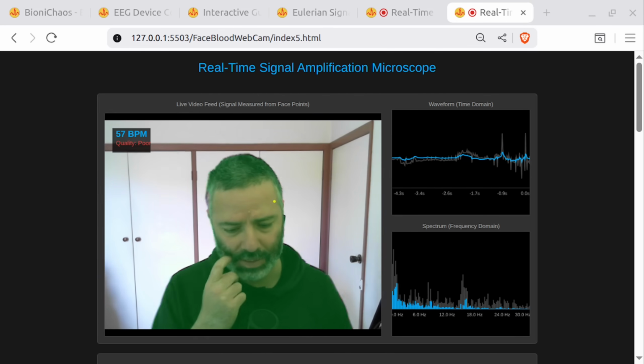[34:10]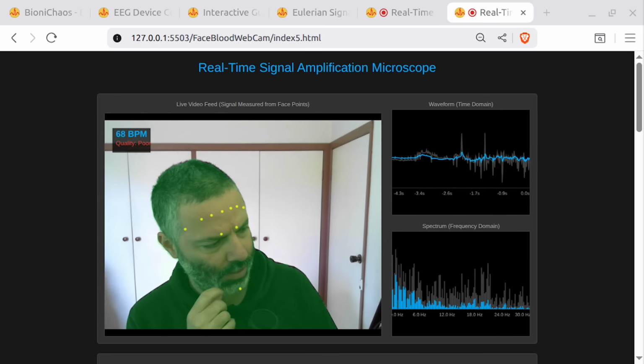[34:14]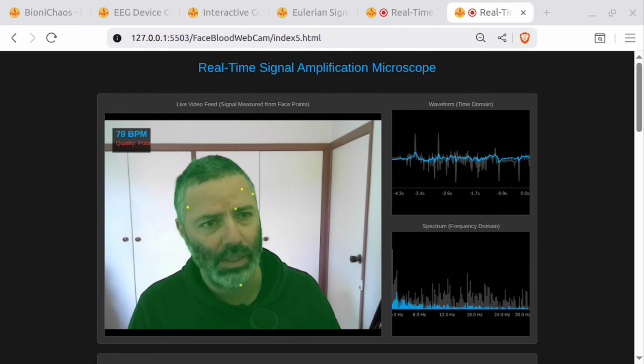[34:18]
Can you explain what the problem might be? Maybe it's the ROI, the points that are just on the hairline potentially. Are they causing the problem, or what the problem might be? Can we reduce the number of points or something? Okay, so I have the forehead only landmarks.
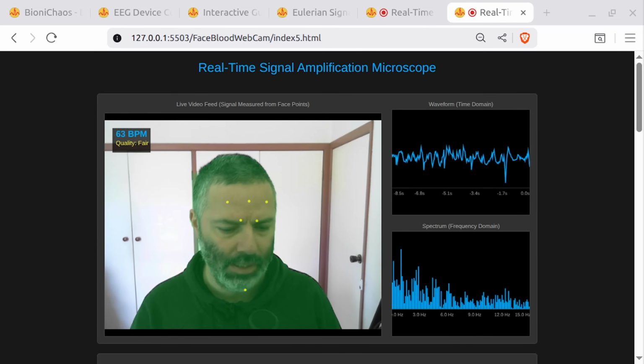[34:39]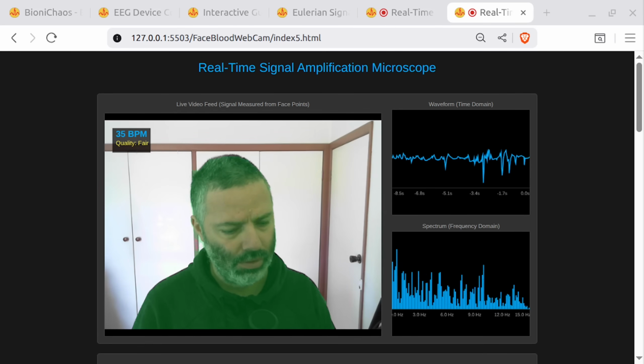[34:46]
Let's find it in the code. I can't believe I'm making manual changes to the code. It's ridiculous. What's all this vibe coding for? And also suggesting to change the motion threshold. No, wait, before the motion threshold.
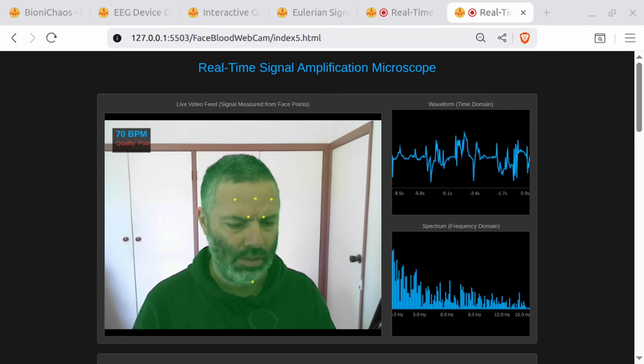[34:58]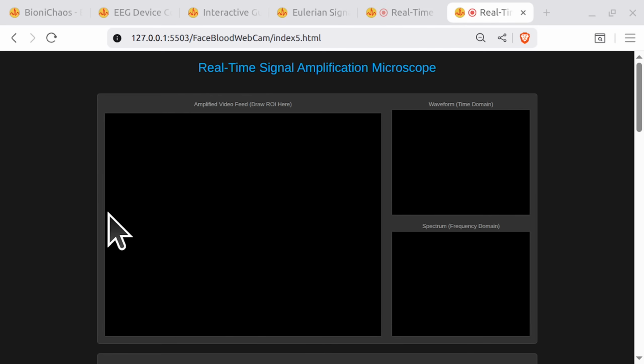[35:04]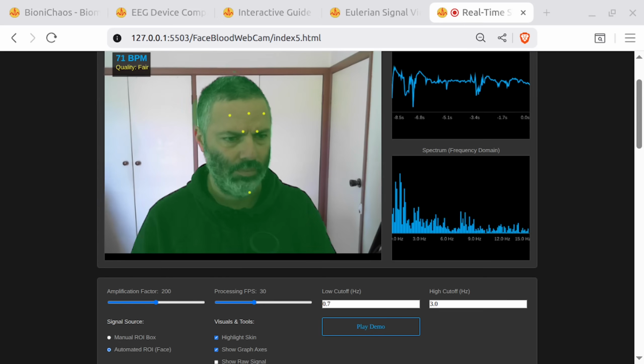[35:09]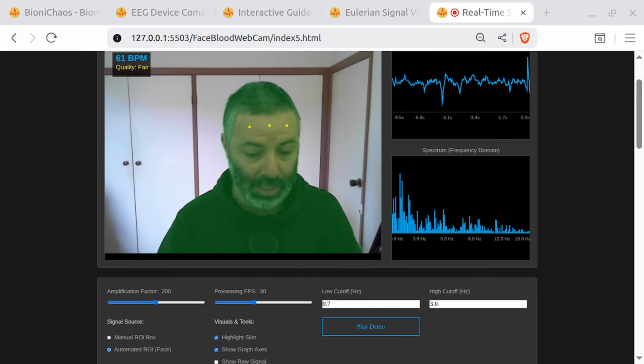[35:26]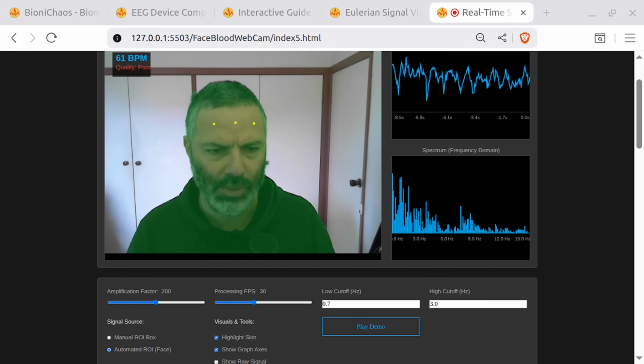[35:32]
How many points are there? 6. Yeah, one of them is incorrect. I think there's a minimum number of points that is required. So just doing these 3. Can get rid of the chin one. Right. It's not measuring blinks really well, but at least we know what a blink looks like.
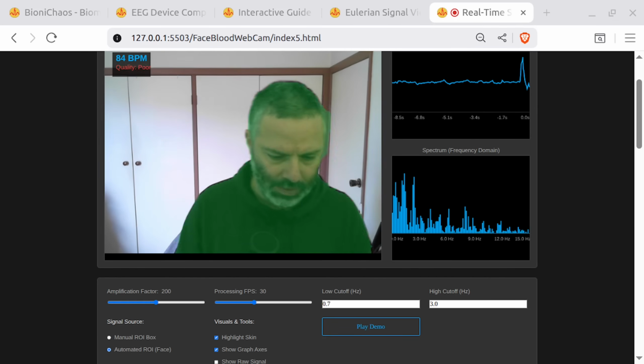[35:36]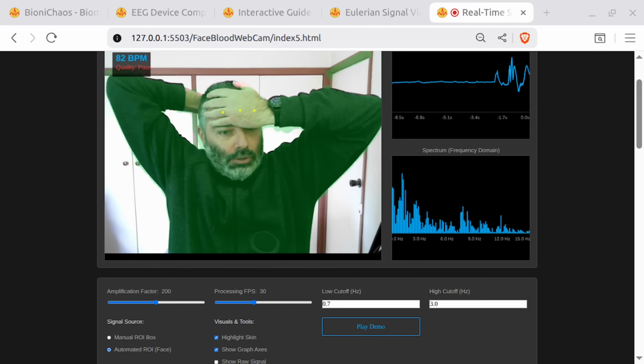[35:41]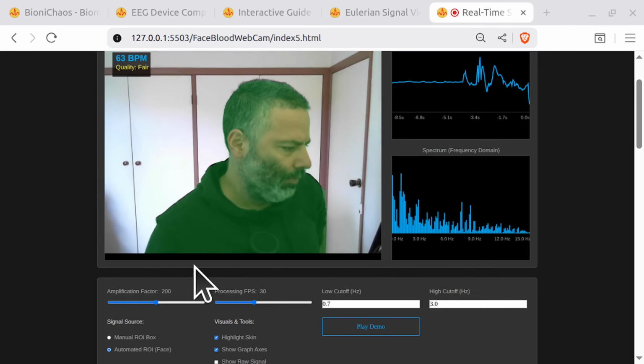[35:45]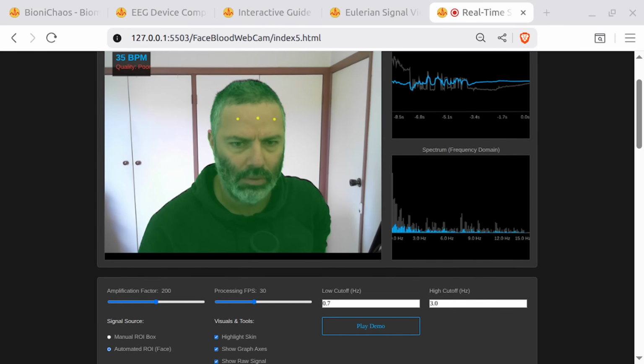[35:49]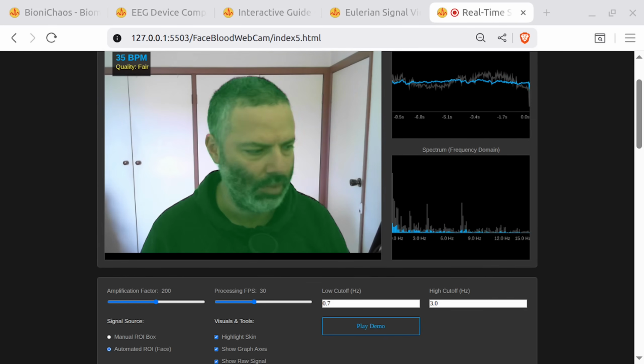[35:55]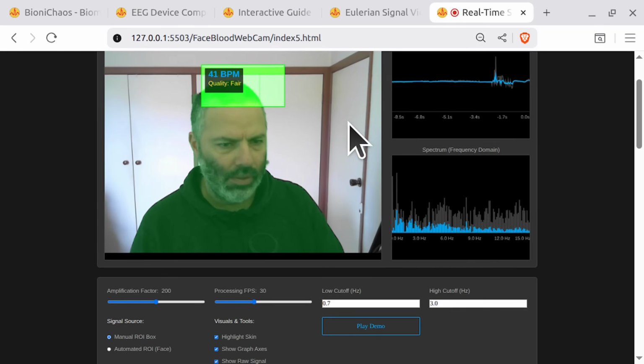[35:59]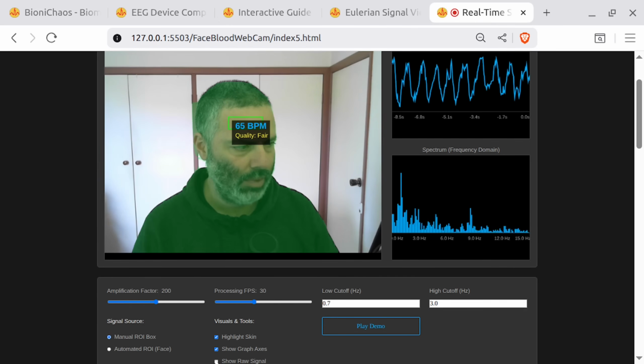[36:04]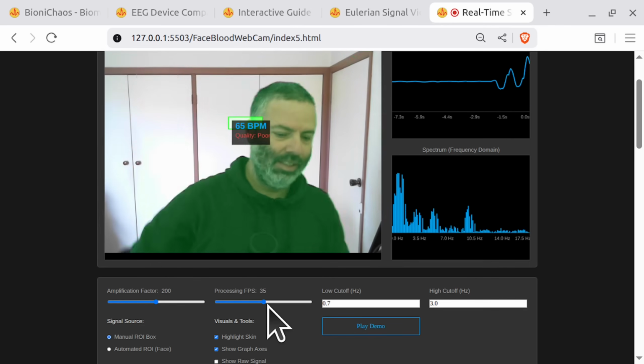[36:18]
Yeah, I'm not able to get a good signal. Oh, come on. I'm not able to get a good signal. The calculation is wrong. So if we're doing manual ROI, yeah, that is correct. If I change the FPS, the calculation is wrong. It's actually double the reading. It's not taking the FPS.
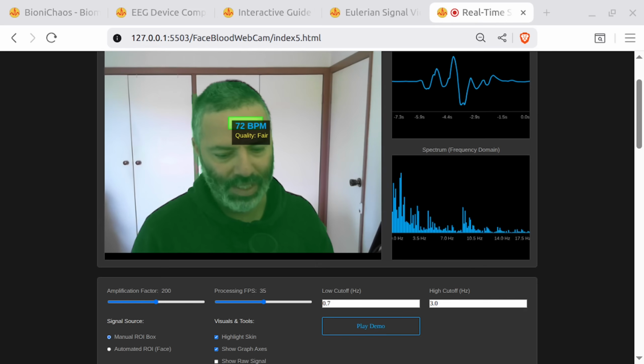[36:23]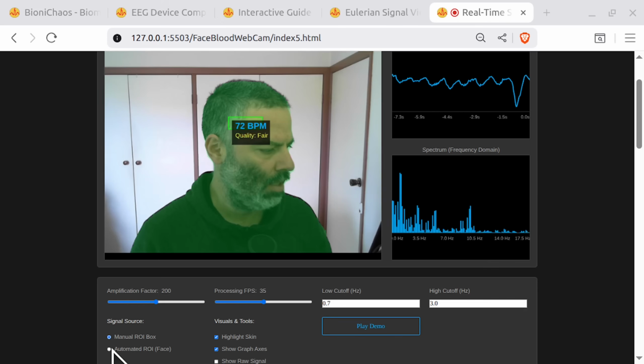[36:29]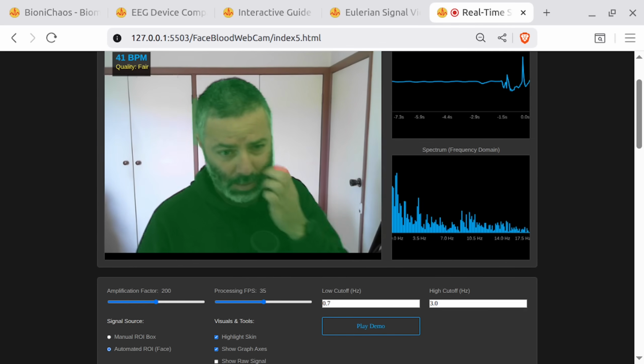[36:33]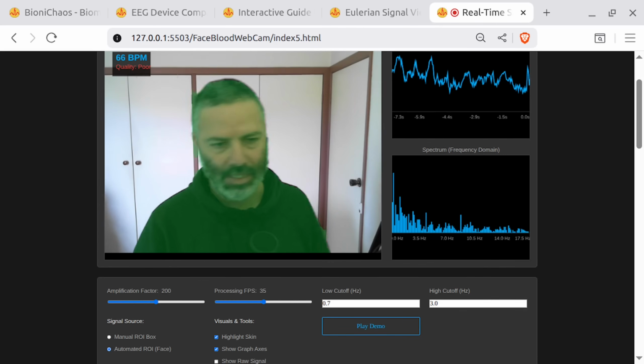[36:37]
It's ridiculous. Everything you add, it's breaking the thing. Yeah, for the automated ROI, I'm still getting a lot of noise. Automated ROI, we should simplify the code.
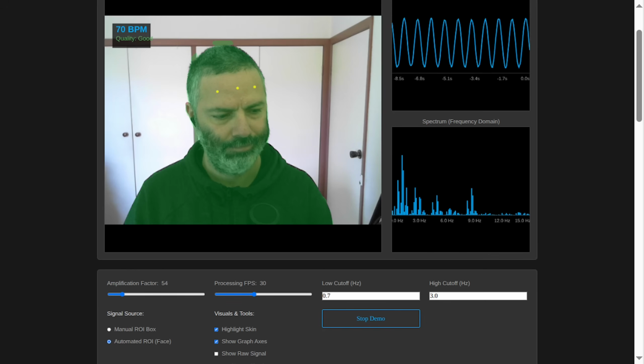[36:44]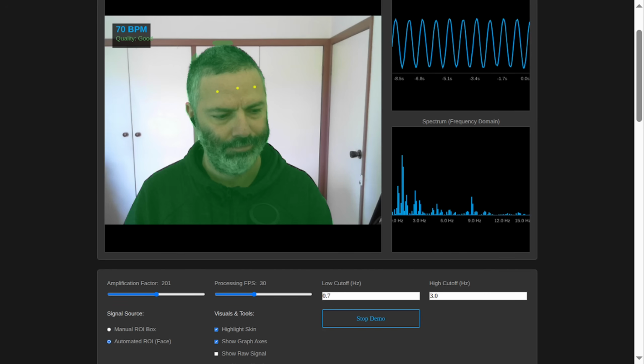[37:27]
What's going on? I thought the Forehead Gang were my elite guys. They are the elite guys, but some of them got a little too adventurous. You've diagnosed it perfectly yourself. Look at that top row of dots. They've wandered right up to the edge of the forest. Your hairline. Ah, the Hairline Frontier. It's a treacherous place. Exactly. It's another high contrast edge. Just like with the beard, every time you make a tiny, imperceptible head movement, that dark hairline moves back and forth under those top row dots. To them, it looks like massive high-frequency noise.
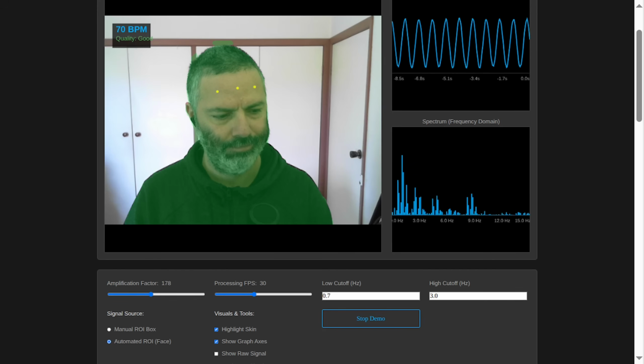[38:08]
So they're not detecting my pulse, they're detecting the seismic activity of my scalp. Precisely. And that high-frequency noise is what's giving you the insane 141 BPM reading. The algorithm sees this loud, rhythmic noise, which is completely drowning out the real, faint pulse signal, and it gets completely fooled. The poor quality rating is the algorithm's subconscious screaming, this signal is really strong and consistent, but it feels wrong. It feels like junk food. It is junk food. It's a signal made of pure jitter. So what's the plan, Coach? The Forehead Gang has proven to be unreliable. Do we fire them too?
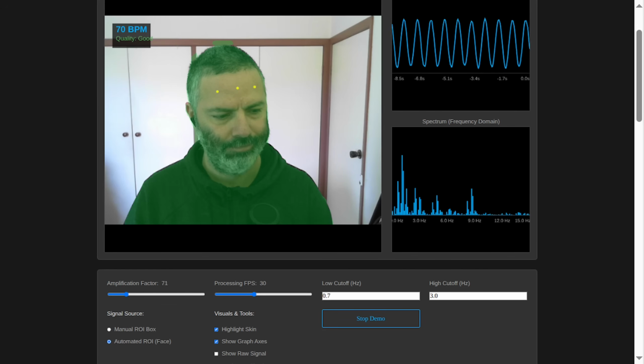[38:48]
No, not at all. This is just the next stage of refining our special forces. We don't fire the whole gang. We promote an even more elite squad from within their ranks. We need to create the mid-forehead elite squad. The mid-forehead elite squad. I like the sound of that. They have better hats, I assume. The best hats. Our current list of approved locations for the dots is a little too generous. It includes the entire forehead. We're simply going to edit that list and be more exclusive. We'll only approve landmarks that are in the dead center of the forehead, the super safe zone, far from the hairline frontier on the north and the eyebrow canyons to the south.
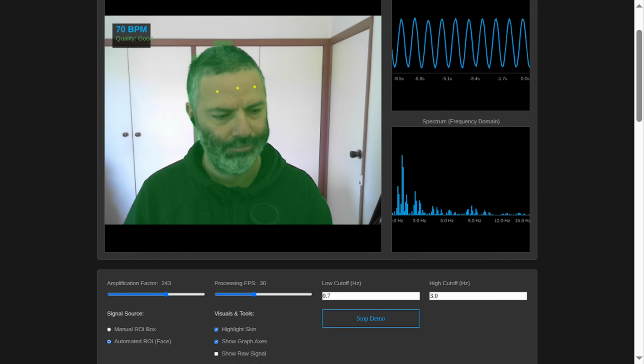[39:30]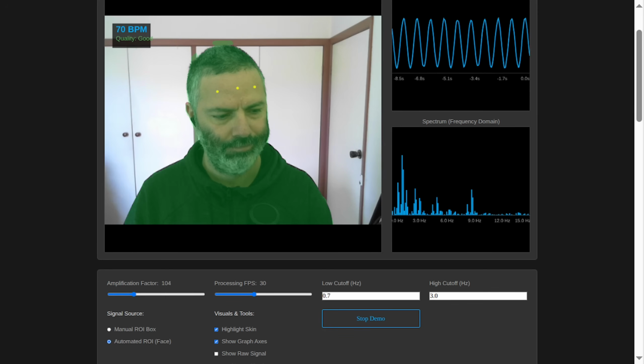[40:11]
So we're basically telling our dots, your new mission, should you choose to accept it, is to be as boring and centrally located as possible. That's the mission. We want the most stable, unexciting, and reliable patch of skin we can find. And if we want to be even more ruthless, we can tighten their motion filter. We can lower the motion threshold value. What does that do in layman's terms? It's like telling them, I don't just want you to be still, I want you to be so motionless that a sleeping cat would look hyperactive by comparison. It makes them ridiculously sensitive to any jitter, ensuring that only the absolute most stable points get to report back. Brilliant. Let's do it. Form the mid-forehead elite squad and then enroll them in a Zen meditation course until they achieve ultimate stillness. My real BPM is counting on it.
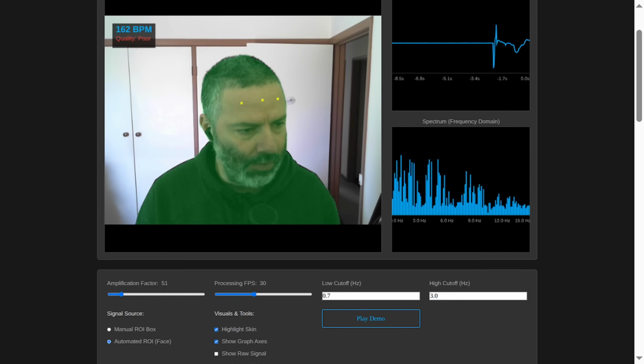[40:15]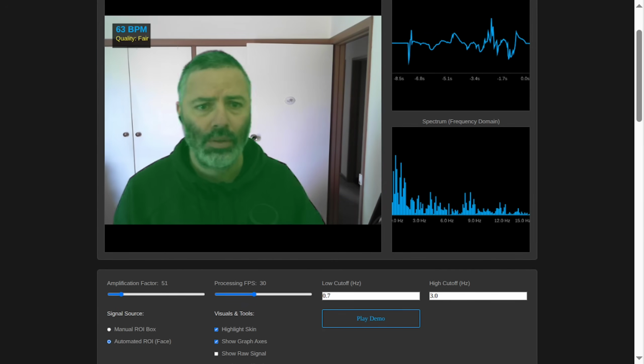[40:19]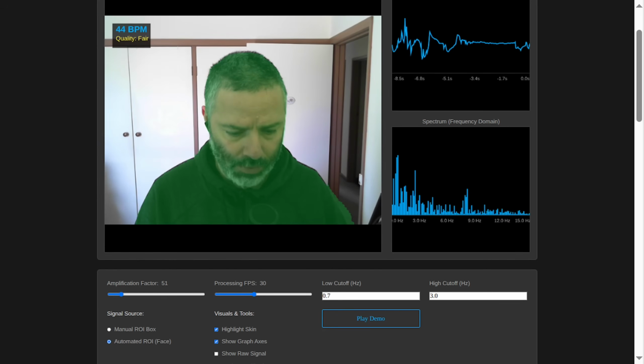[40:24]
How good is it that the robots can do all that talking for you? Still having trouble though. Should we reduce the motion threshold? Can try it out.
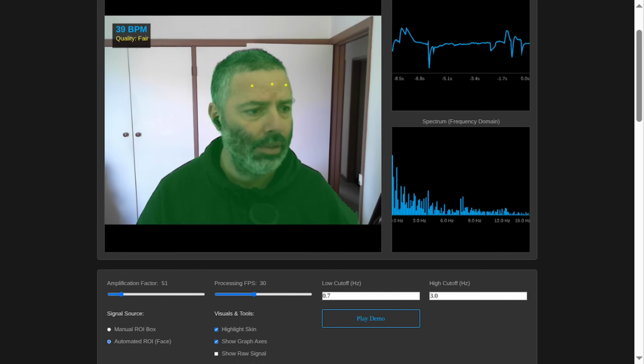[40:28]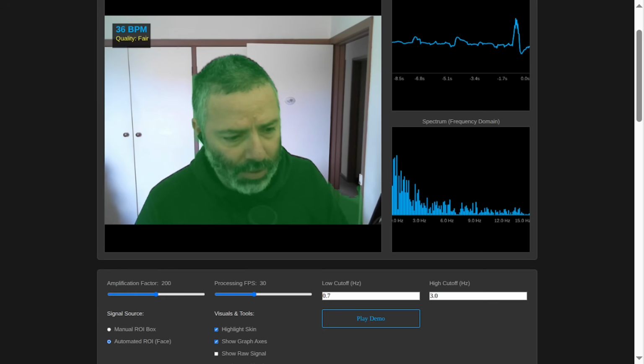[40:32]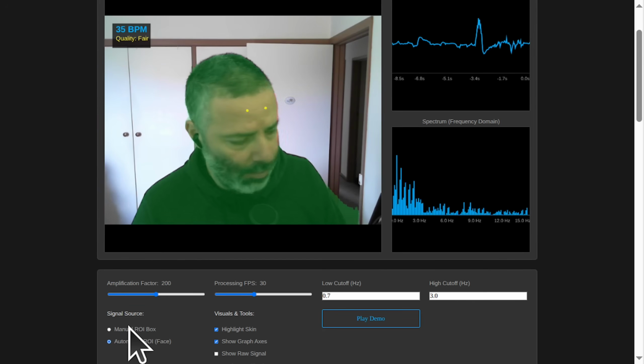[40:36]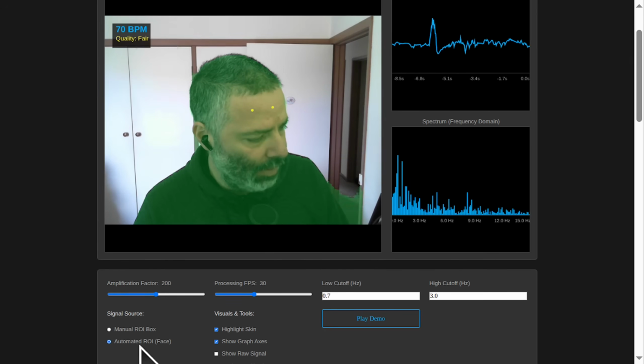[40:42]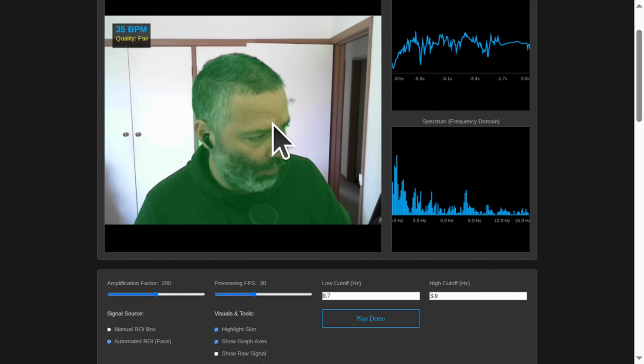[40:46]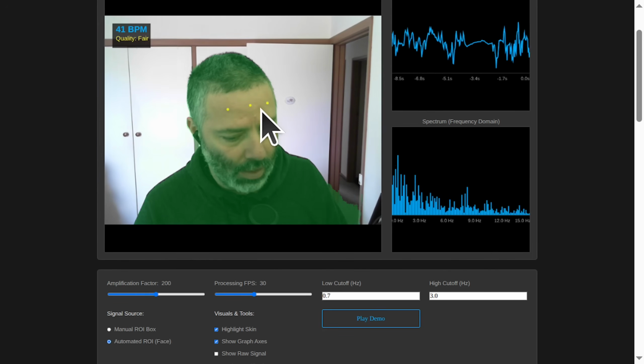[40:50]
Yeah, there's a couple of things. First of all, just a minor change. We want the automated ROI to be selected by default instead of the manual ROI box. Now the second thing is that for the automated ROI, do we actually need a box around those dots, the yellow dots?
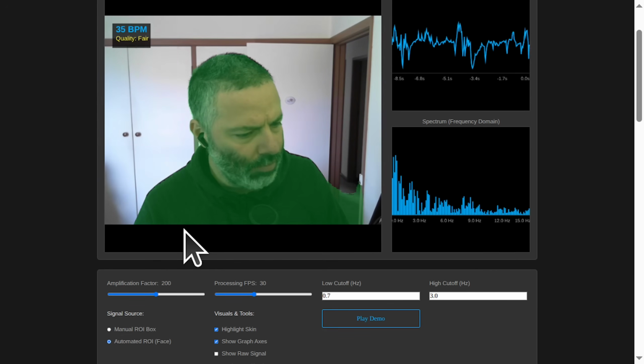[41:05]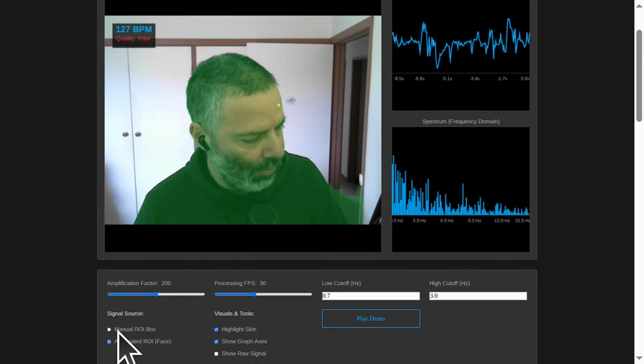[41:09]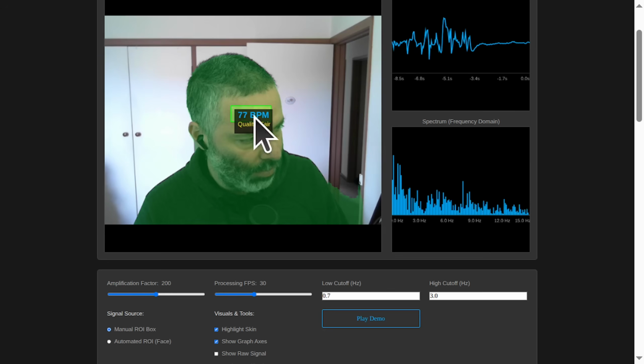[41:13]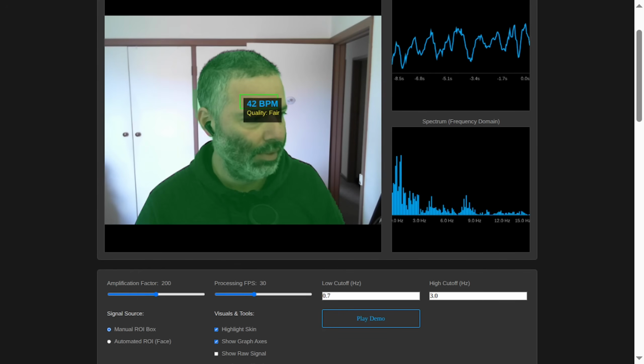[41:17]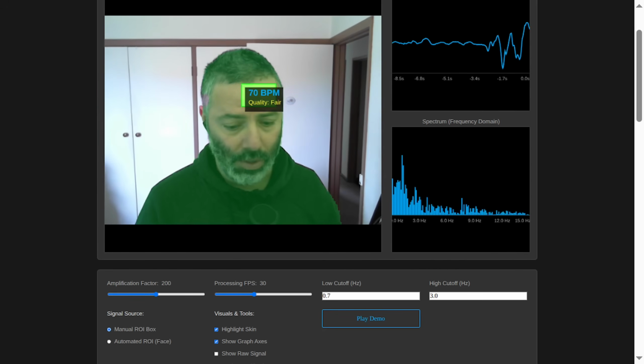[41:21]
So when we have the automated ROI selected, can we or should we have a box around it so the results are comparable to the manual ROI? Because the manual ROI does actually work and give us a good quality signal. Yeah, we do get a good signal, don't we? Yeah, generating a new version of the code.
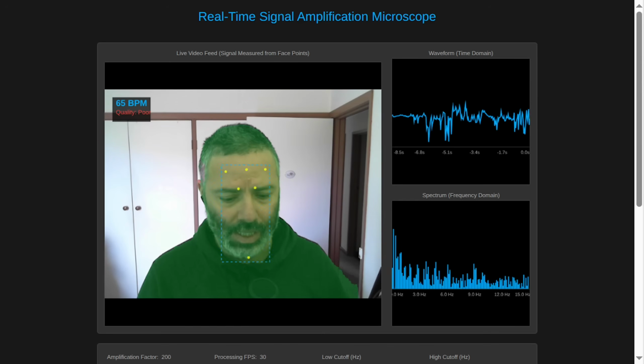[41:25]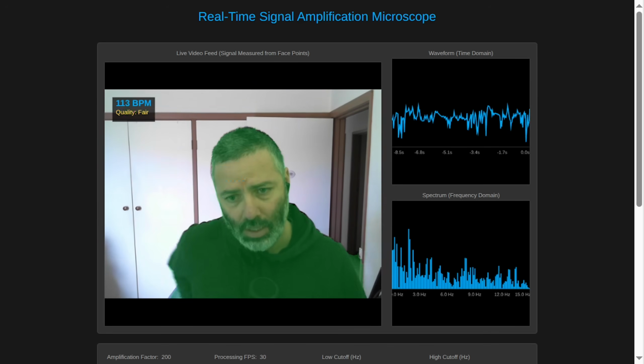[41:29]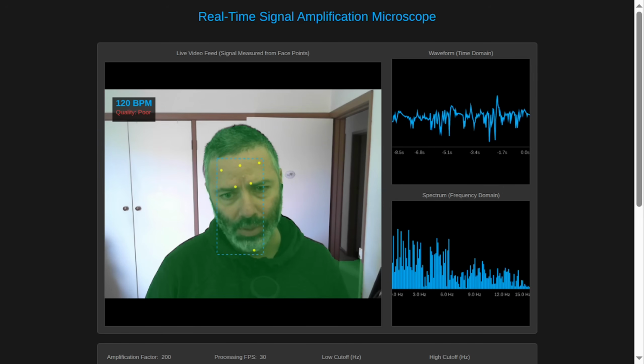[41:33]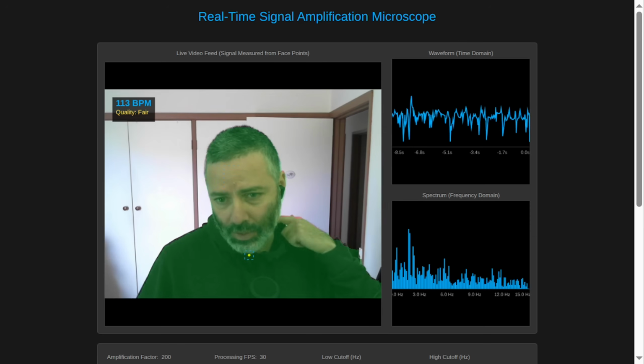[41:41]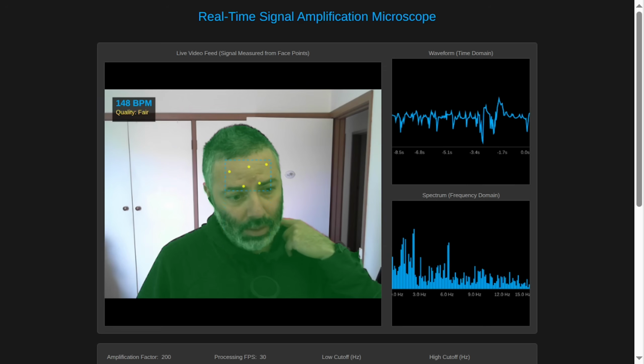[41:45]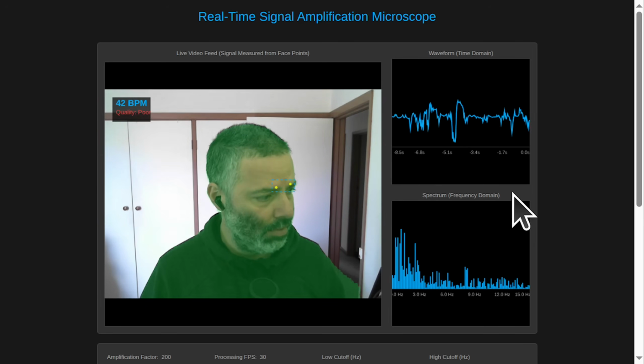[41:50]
Okay, can we change the ROI selection to essentially mark the whole forehead and then do a box within it, making sure we're not touching any hairline or eyebrows or anything like that? Can you improve it based on the image, taking into account the image attached? Oh, we have trouble.
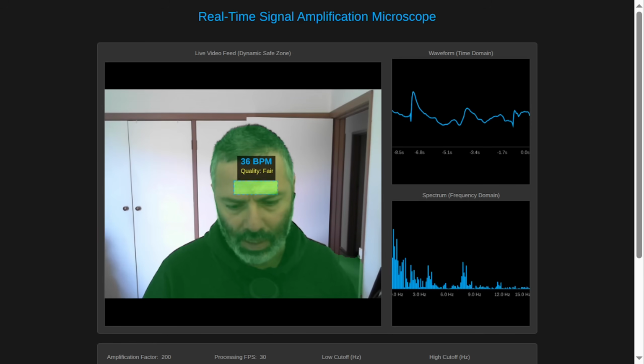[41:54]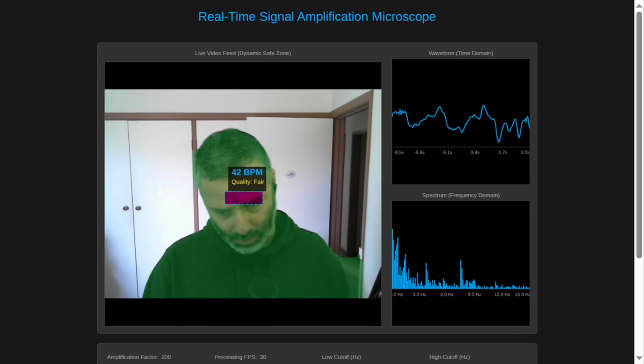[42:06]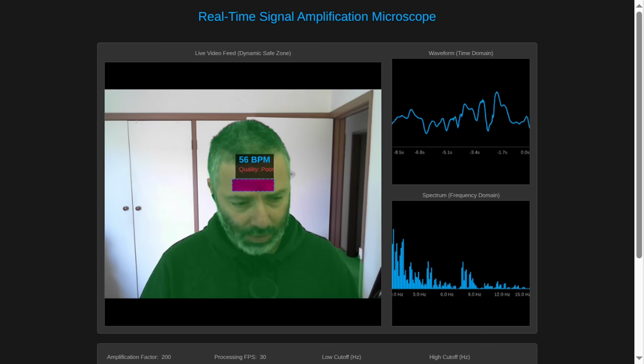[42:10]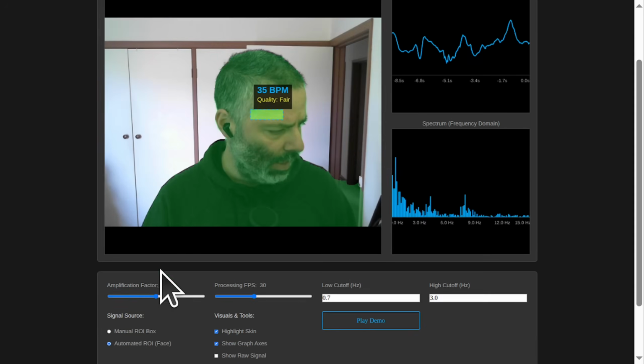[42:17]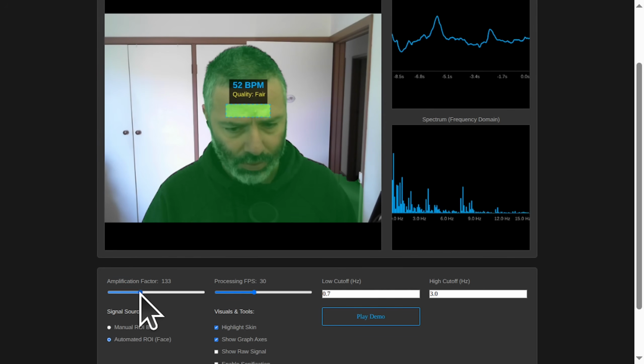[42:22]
Okay, can we improve the box, make it a bit higher and potentially a bit larger? Can we also show the yellow dots based on which the ROI box is being selected? And also, can you comment on if the size of the box matters for the signal quality? Will it change the signal quality or not? Also, the amplification factor of 200, is it too high? Should it be about 100 by default?
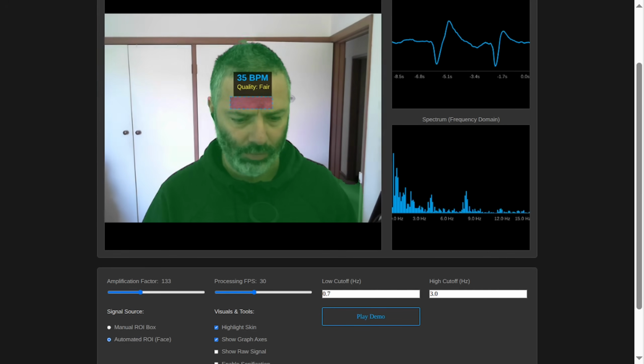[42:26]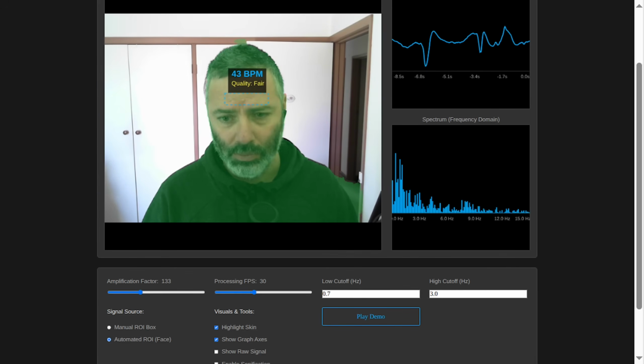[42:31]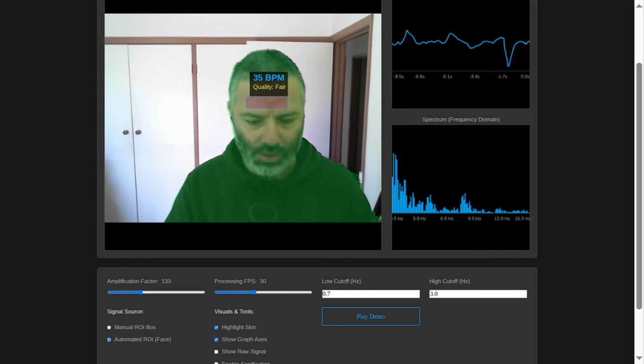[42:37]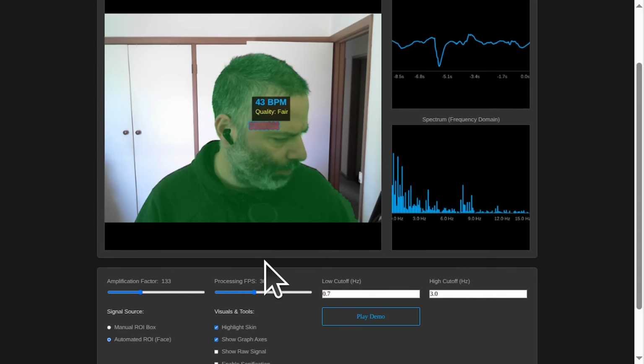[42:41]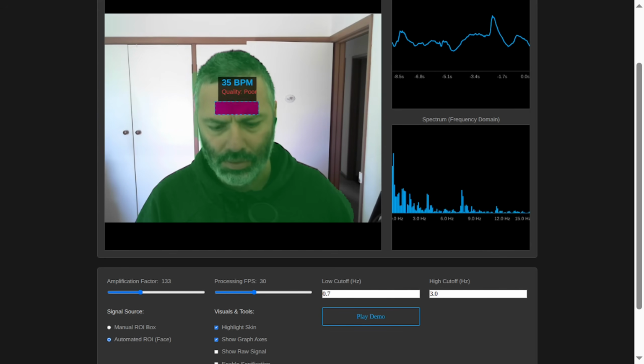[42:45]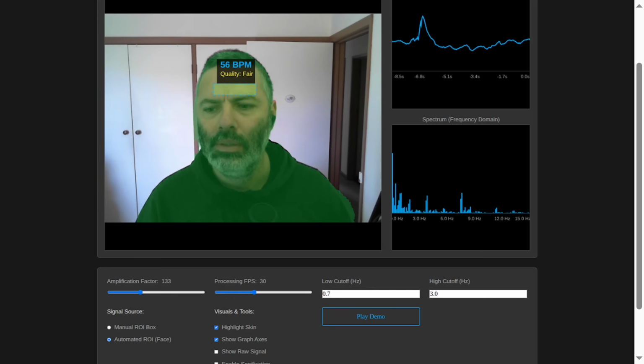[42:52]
What do you think? I will do an overview by Notebook LM as well, because that actually should make better sense, because they're professional podcasters talking. Still trying to do the skin detection. Not sure why, but we are not using that anymore. Maybe we are. Are we able to get any signal?
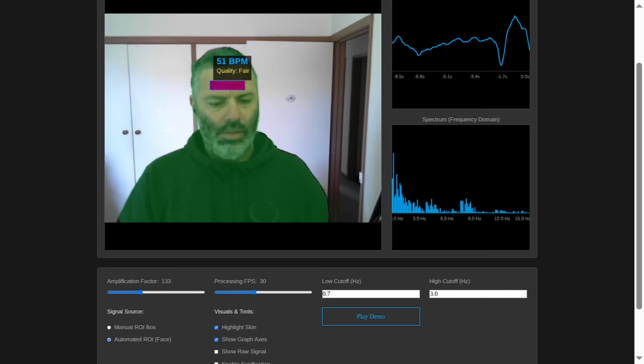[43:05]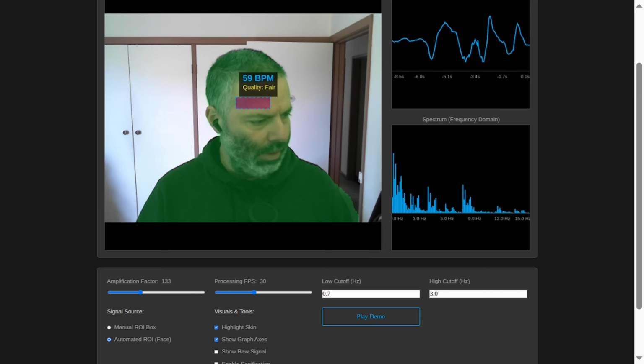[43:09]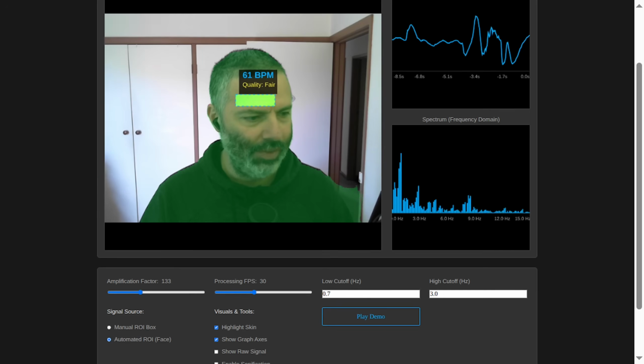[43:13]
We'll improve the... There's a signal there. There's still a high frequency component. It's actually generated the conversation as well as the code. That's pretty good. It's struggling with the face.
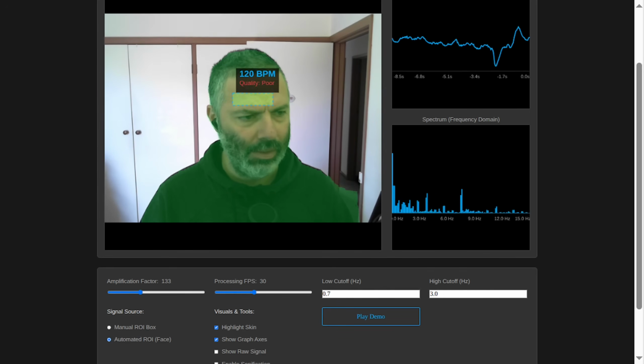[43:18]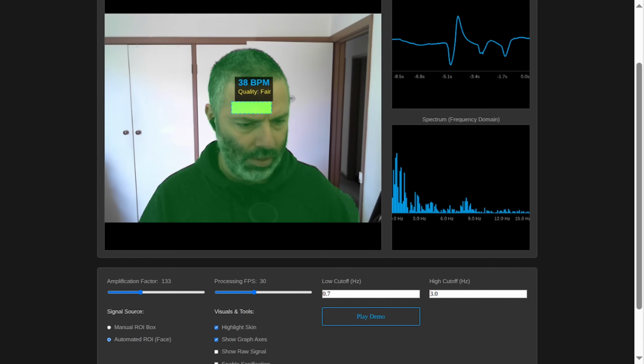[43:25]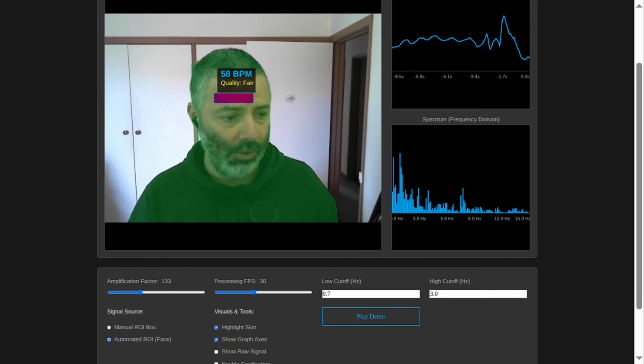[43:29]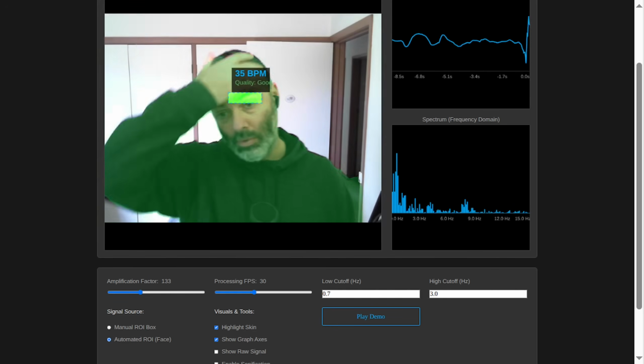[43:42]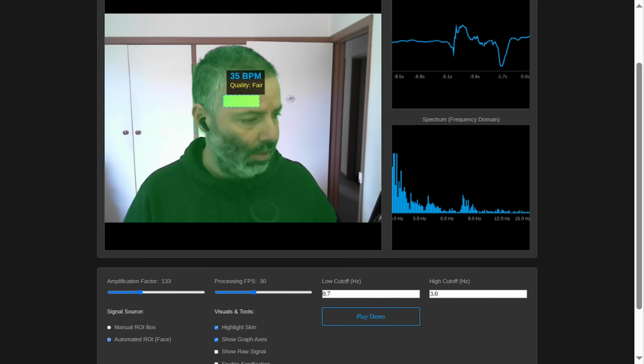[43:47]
I don't like placeholders. We'll do the chat. That's okay. We will do the chat between comedian and the data scientist. Can you regenerate the code without any placeholders? AI Studio doesn't have an enter for sending the prompt. You need the control enter instead.
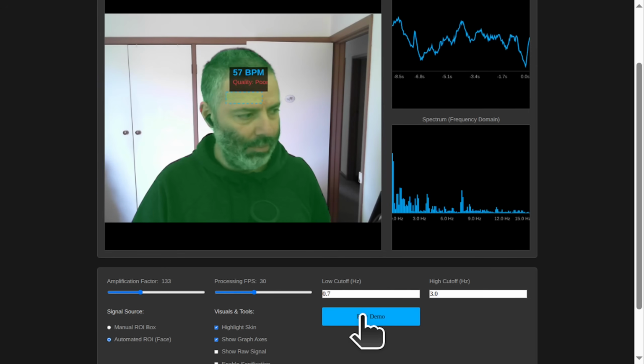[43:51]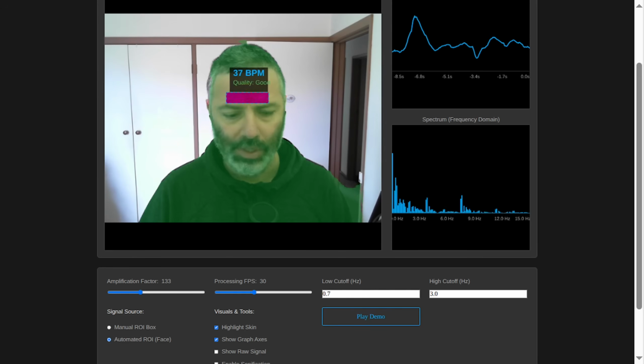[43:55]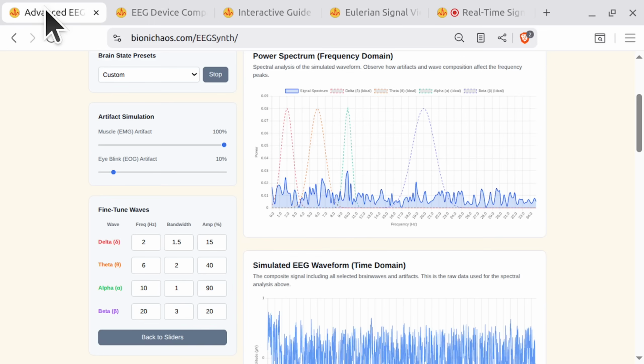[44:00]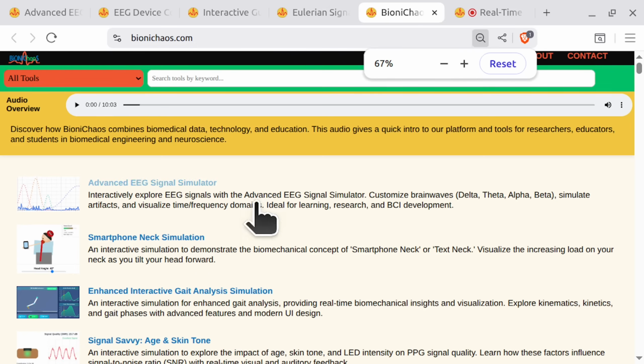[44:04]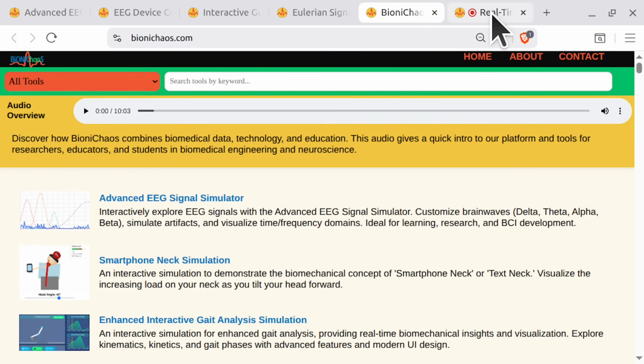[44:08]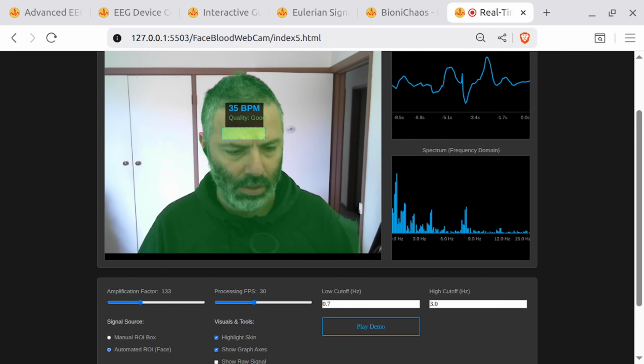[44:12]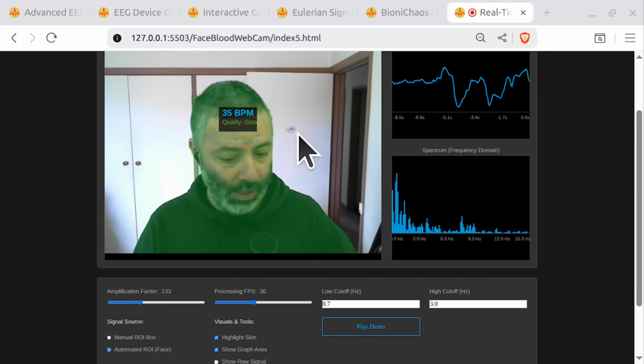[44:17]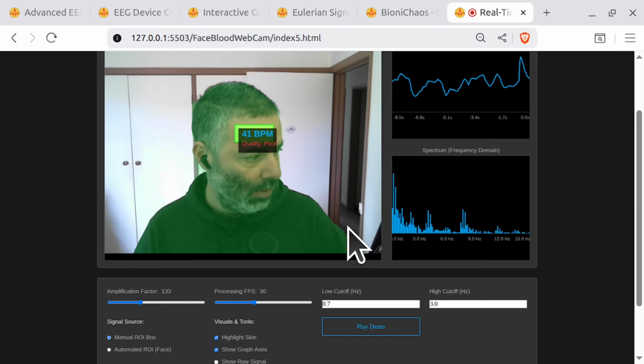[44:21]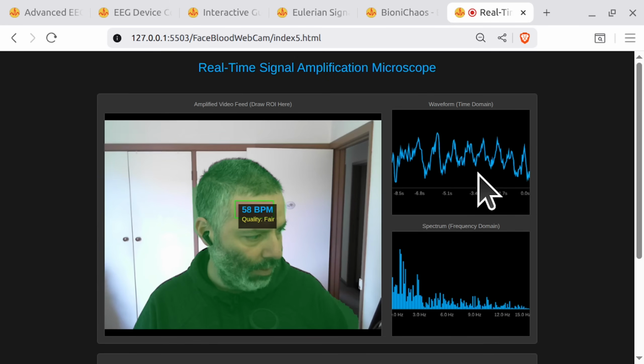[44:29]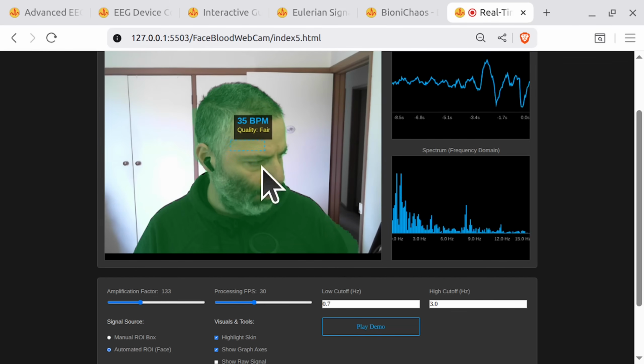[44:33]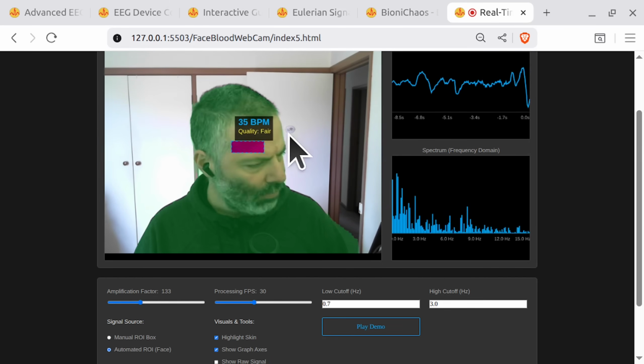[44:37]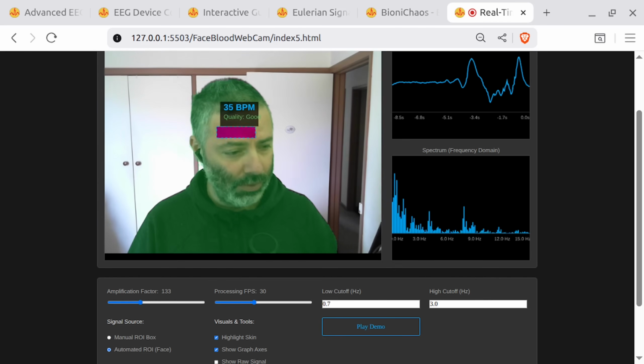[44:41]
Yeah, we're regenerating the code, trying to fix the ROI automated selection. I mean, we can do a manual one. Yeah, 63 is about right. My Garmin is showing 62. So that's correct, and you can see the signal there. It's pretty good as well. But when we select automated mode, we should get the same result. And we'll also be trying to do some motion filtering.
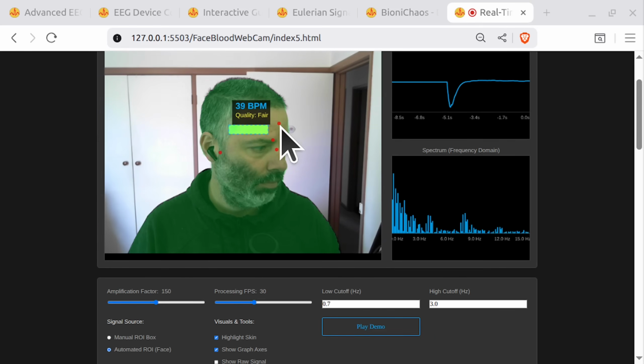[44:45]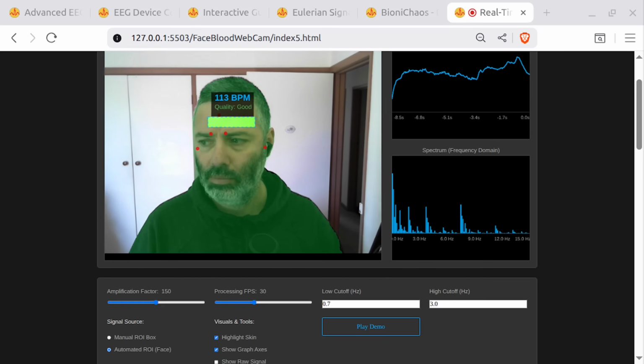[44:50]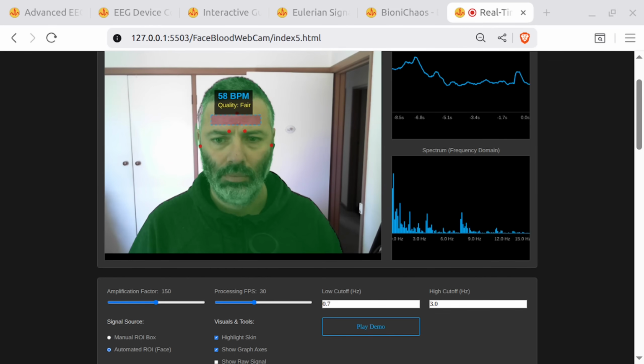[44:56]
Misha, we have progress. The system is no longer convinced I'm a statue. We're getting a reading of 40 BPM with fair quality. We've moved from clinically dead to hibernating grizzly bear. It's an improvement. I see it. The dynamic safe zone is working. It's staying away from your hairline and eyebrows.
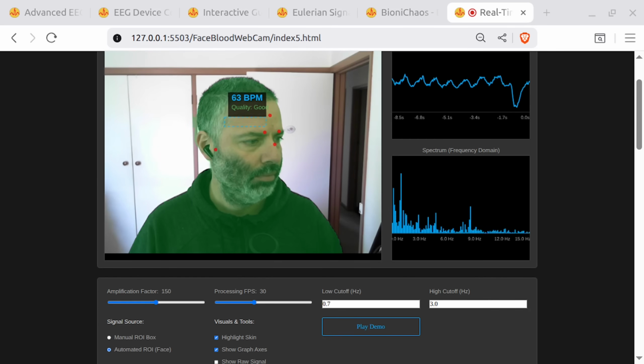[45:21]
But the signal is still weak. And you're right, the box itself looks a little timid. It's a postage stamp on my forehead. It needs more authority. Can we make it taller and wider? Also, I feel like we're flying blind. You told me the box was based on my surveyor landmarks, but where are they? I want to see the team that's drawing these maps.
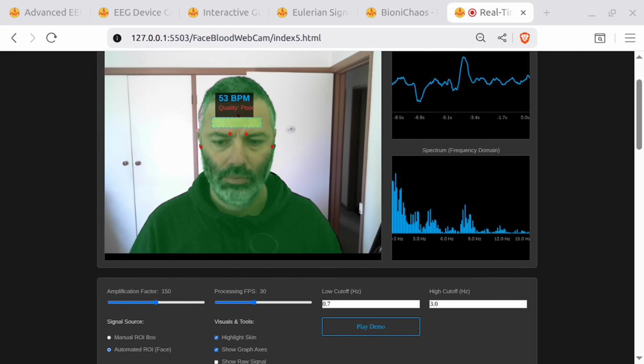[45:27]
Excellent points. We can absolutely make the box bigger and re-enable the surveyor dots so you can see the boundaries it's using for its calculations. But this brings us to a very important question you asked. Does the size of the box actually matter? I'm on the edge of my seat. Does it? It's a fascinating trade-off.
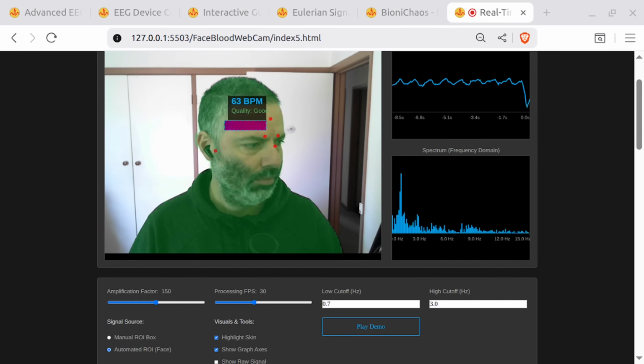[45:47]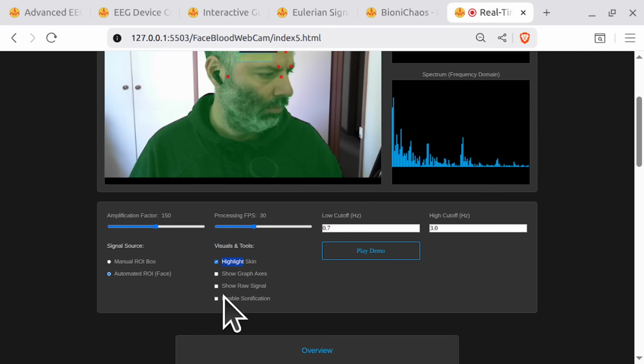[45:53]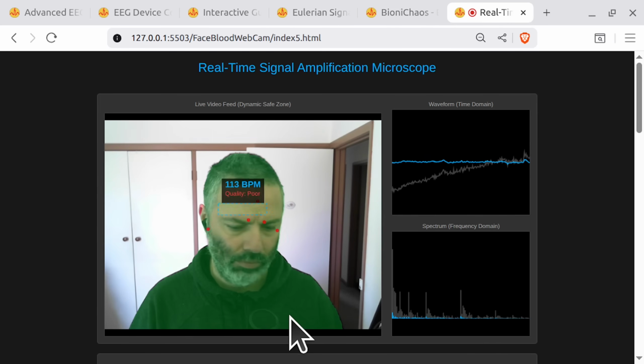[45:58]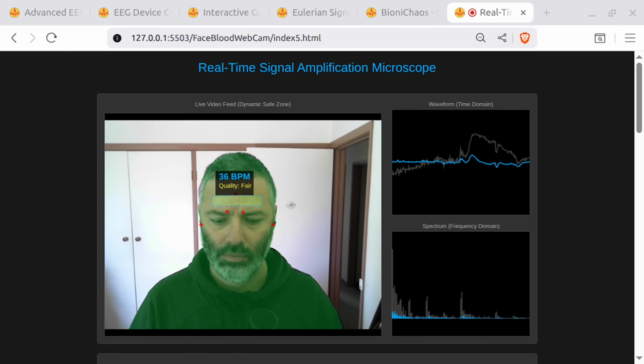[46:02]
Think of our fishing net analogy again. A larger box, i.e. a bigger net, has a huge advantage. It captures thousands more pixels. By averaging them all, you drastically reduce random noise from the camera sensor itself. It's the law of large numbers. The signal becomes much smoother and cleaner.
But it also has a huge risk. The bigger the net, the higher the chance you'll accidentally scoop up a bad area, a wrinkle that moves when you frown, a patch of uneven lighting, or the edge of your hairline. That kind of motion noise is 1,000 times worse than sensor noise. So there's a Goldilocks zone.
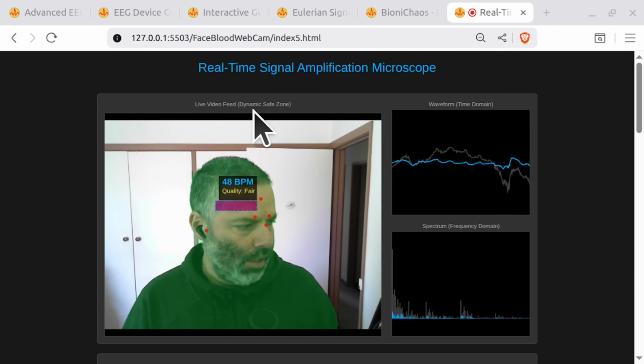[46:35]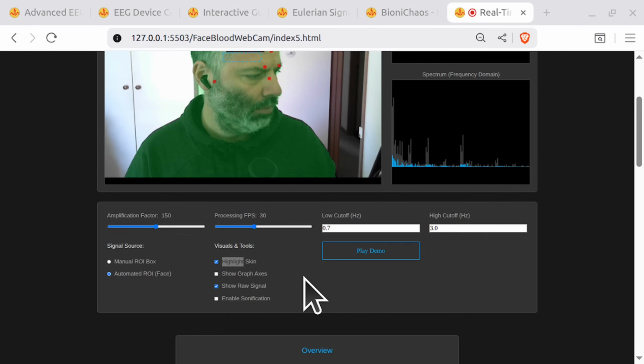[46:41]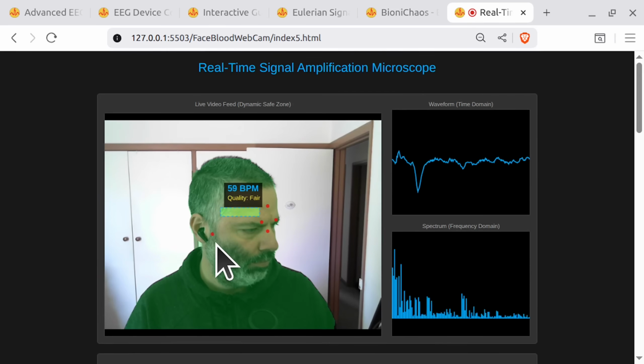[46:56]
Not too small, not too big. We need a box that's large enough to get a smooth signal, but small enough to stay in the premium grade A motionless skin real estate. You've just summarized the entire challenge of this technology in one sentence. That's exactly right. So we'll make the box bigger by reducing the inset we apply, giving it more area for that smooth averaging. But we'll be careful not to make it too big. We will also shift it slightly higher to be even safer from the eyebrows.
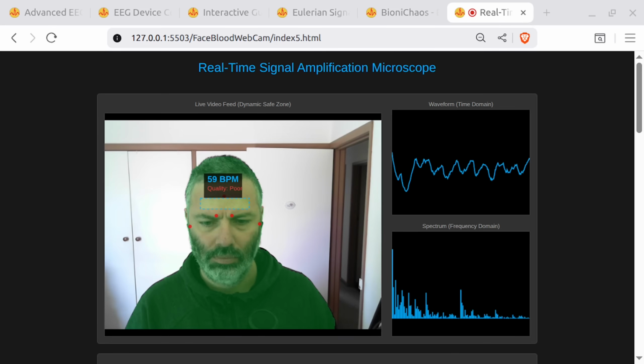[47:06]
Perfect. And one last thing. This amplification factor, it's at 200 by default. It feels a bit aggressive, like turning the volume up to 11. Shouldn't it be more subtle, like 100? That's a great observation about user experience. Technically, the amplification factor is purely visual. It has zero effect on the BPM calculation. The math is done on the raw, filtered signal. The amplification is just applied at the very end to make the pulse visible to you. So it's just the special effects slider. Exactly. 200 is great for a dramatic demonstration, but for regular use, a default of 100 or 150 is probably more comfortable. We'll adjust the default.
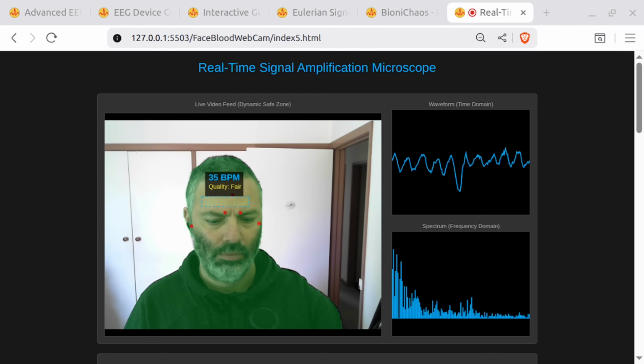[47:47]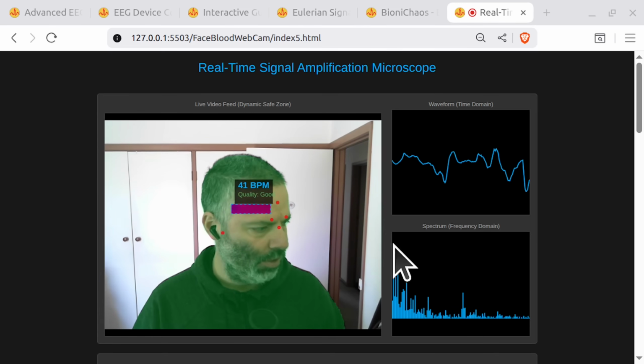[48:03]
Fantastic. To recap the new mission plan. Make the safe zone box bigger and nudge it upwards. Show me the red surveyor dot so I know what it's thinking, and turn down the special effects knob to a more reasonable default. Mission accepted. Let's regenerate the code. Mission accepted.
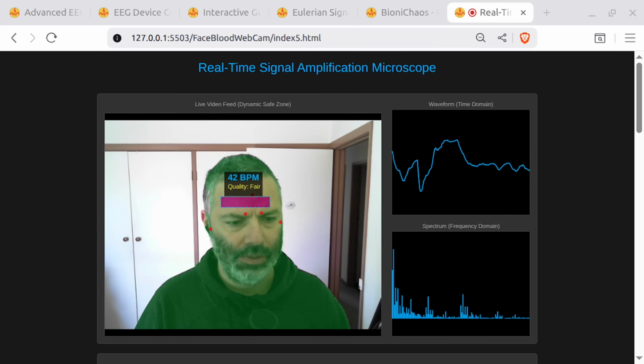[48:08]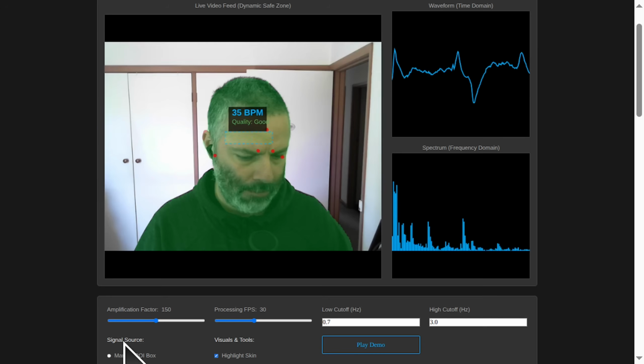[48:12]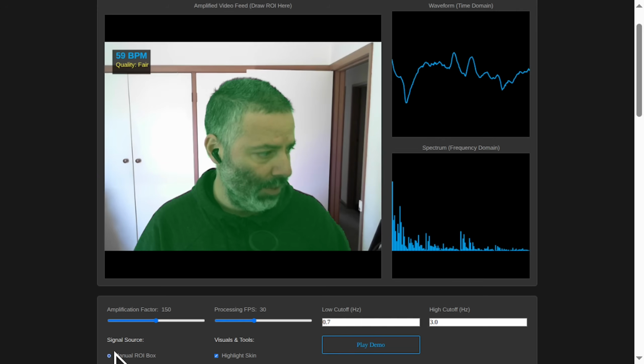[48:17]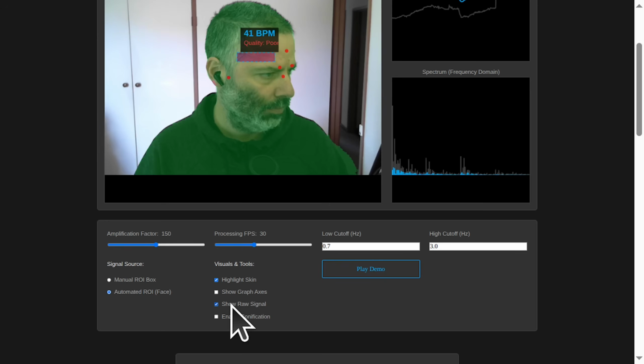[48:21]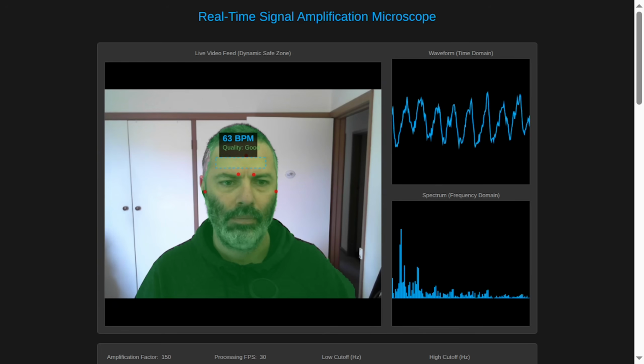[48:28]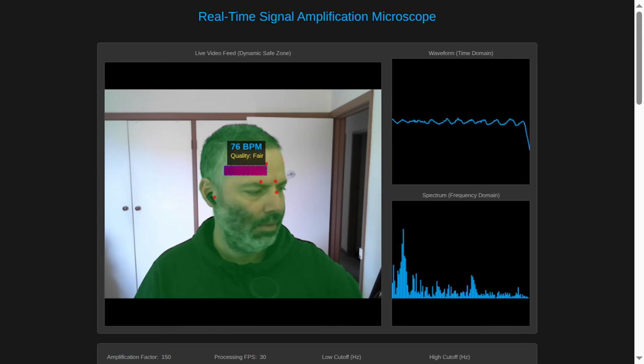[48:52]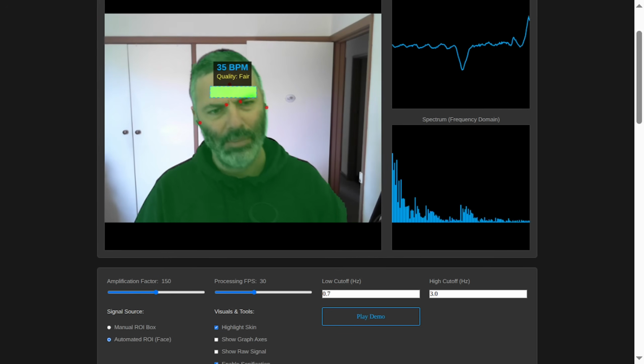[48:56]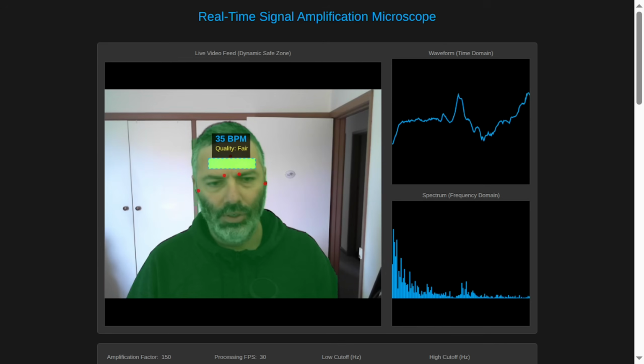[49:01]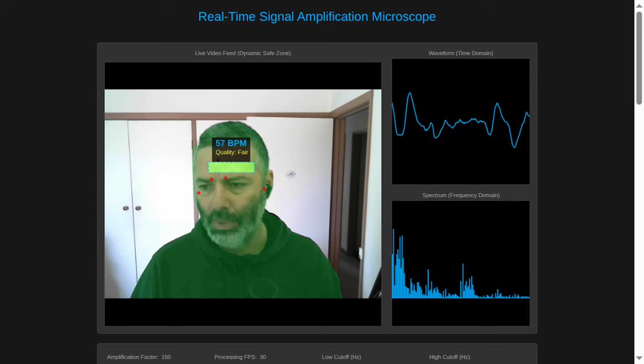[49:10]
Okay, we're getting good enough readings. This will be available for you to play with, by the way. So getting comparable results to the manual ROI box, which is good. Can show the raw signal, show the filtering. That is correct. Once you start talking, the signal quality gets reduced. But that peak there, that's the real beats per minute. Yeah, reduce the amplification factor. Yeah, turn off the sonification. So there you go. We'll deploy it on the side and make it available for you to play with as well.
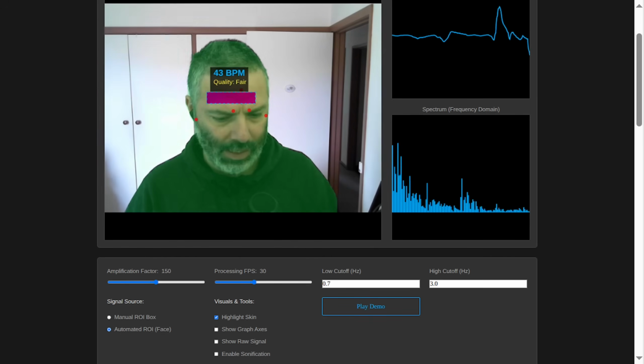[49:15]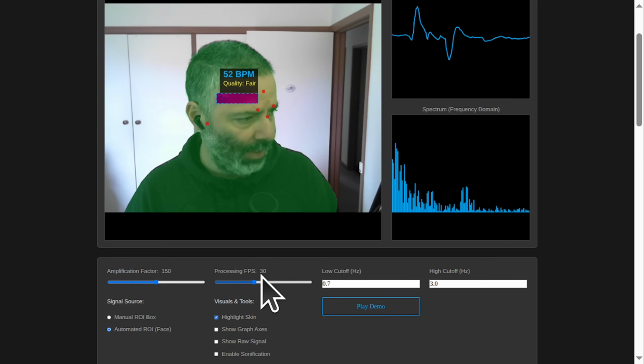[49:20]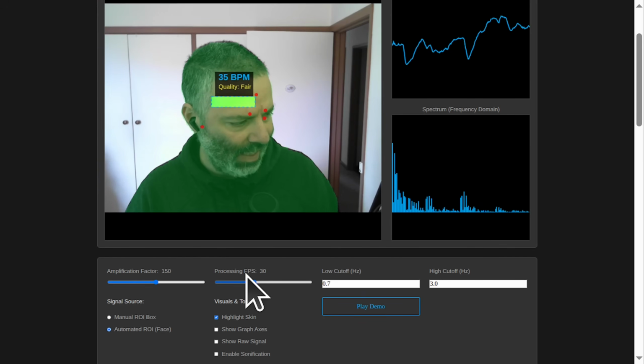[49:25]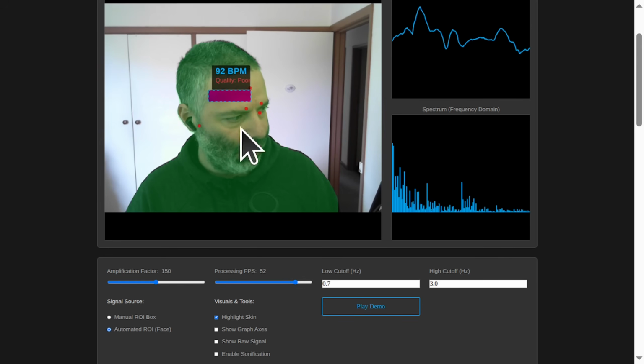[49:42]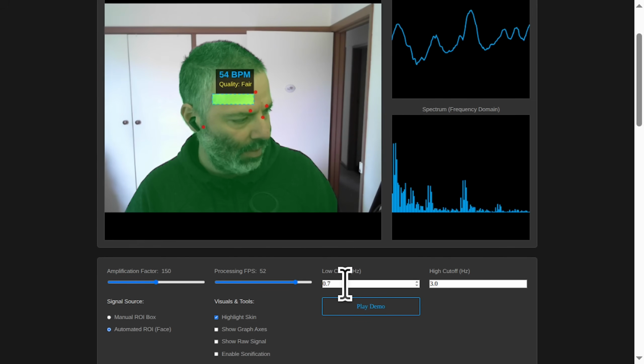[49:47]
There is one bug. There is one specific problem that should be an easy fix. When we change the processing FPS from 30 to a different number, the calculation becomes incorrect. Can we make sure we take into account the current processing FPS set on the slider into the calculation of the beats per minute? That should be an easy fix.
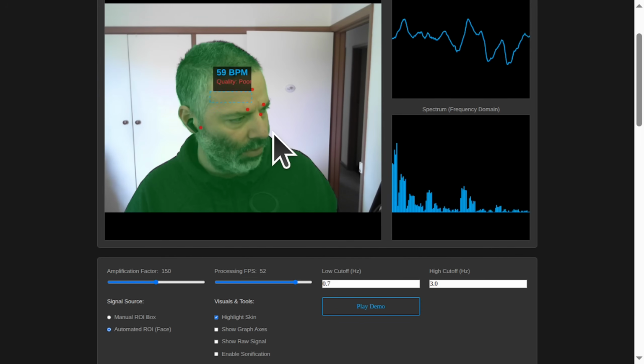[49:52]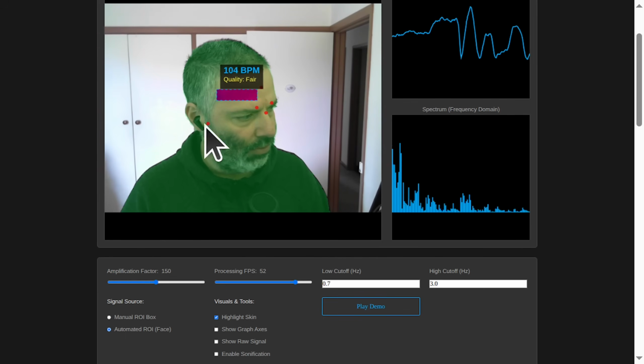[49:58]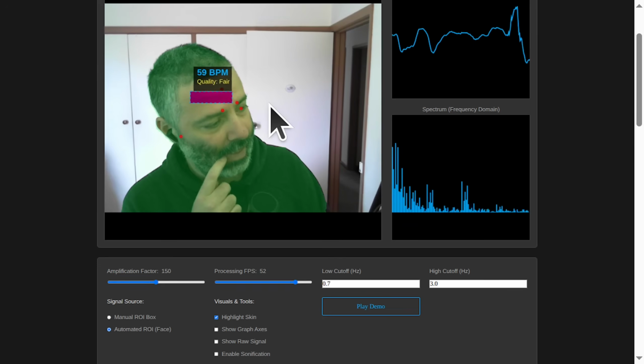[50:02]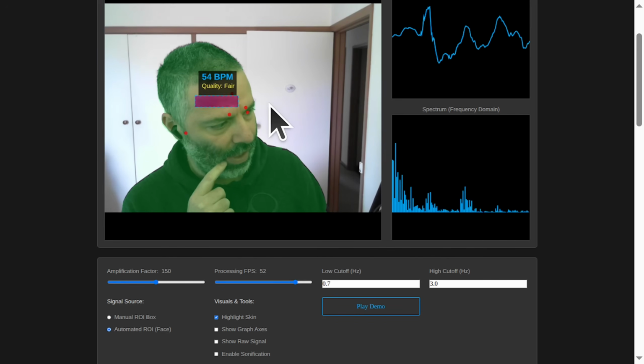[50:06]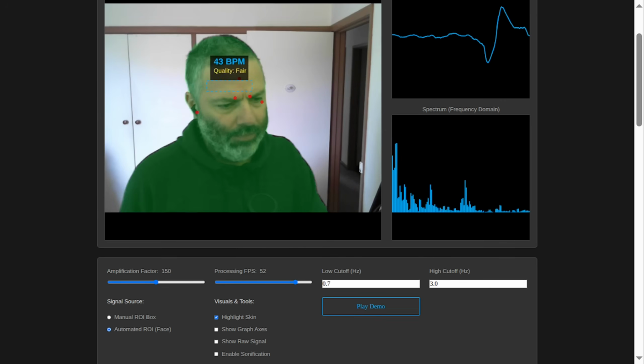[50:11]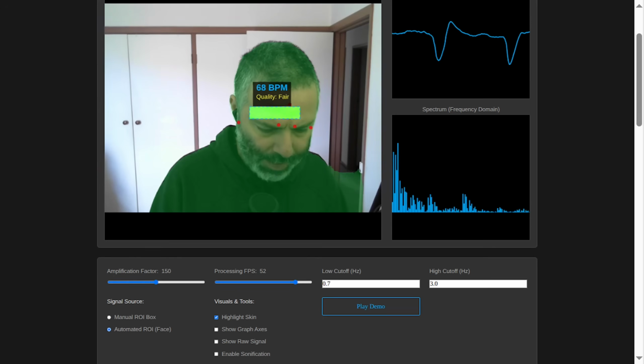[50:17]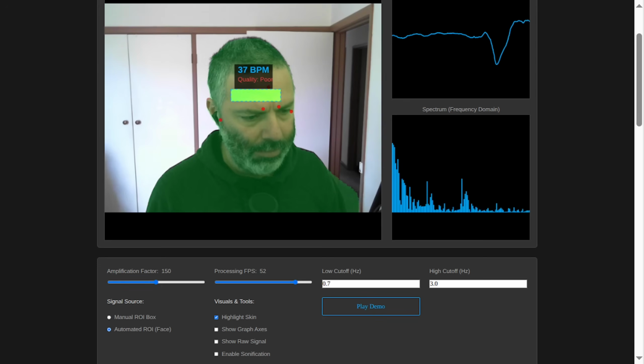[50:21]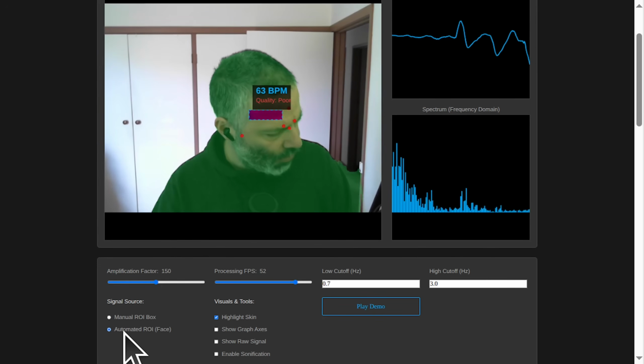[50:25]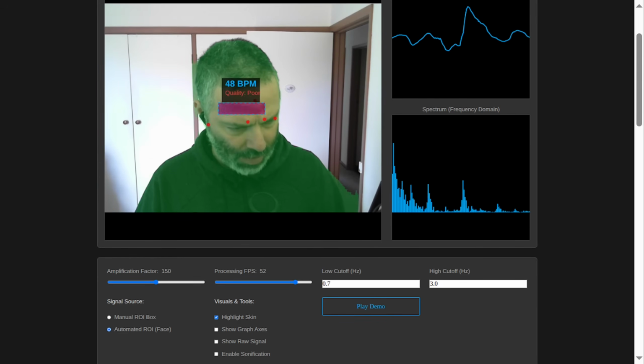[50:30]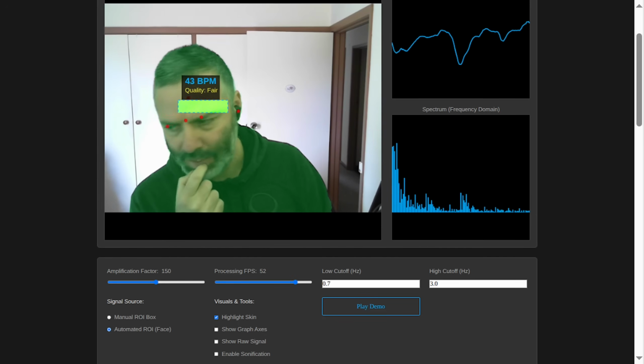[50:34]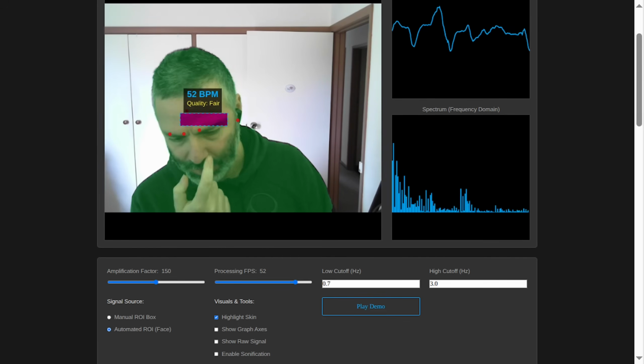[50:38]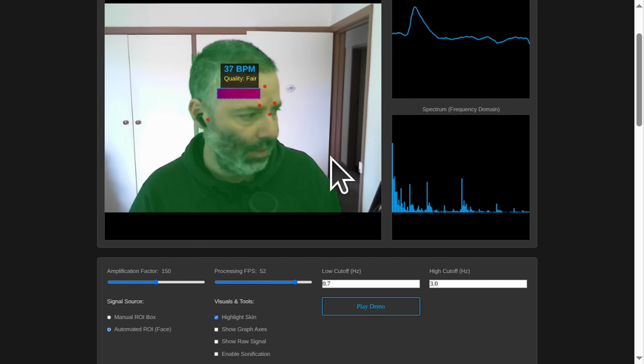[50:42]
Now, another thing is that we can also make the box. Can we bring back the yellow dots and show, so we essentially want to see how the box is being selected? Into the BPM calculation. That's beats per minute. Should be an easy fix. Yeah, I'm not showing in the automated ROI how the box is being selected. I was kind of expecting. Also, can you comment on the ROI box, how it's actually being selected? It seemed to be too narrow at the moment. Can you comment on that? I was kind of expecting it to be taller, not as flat.
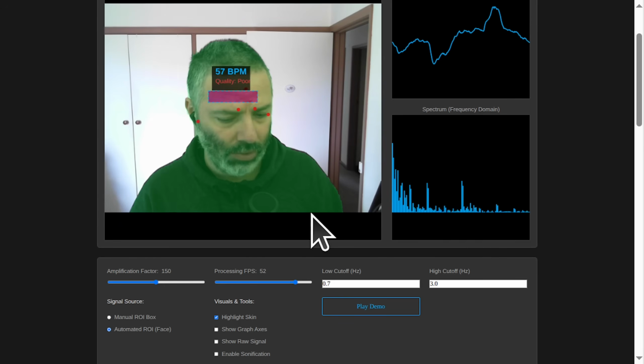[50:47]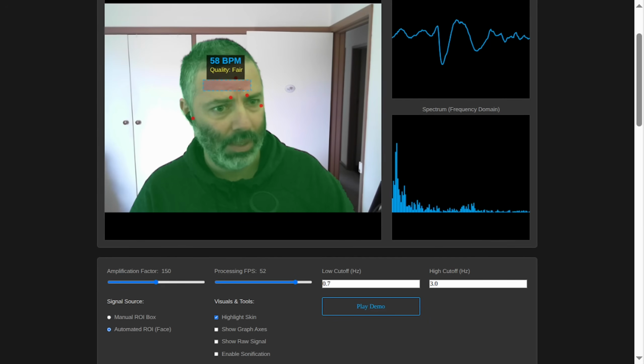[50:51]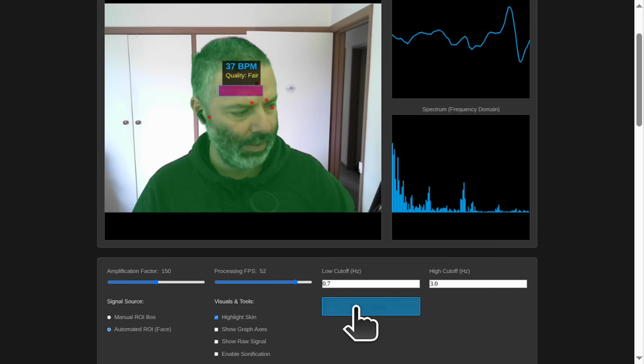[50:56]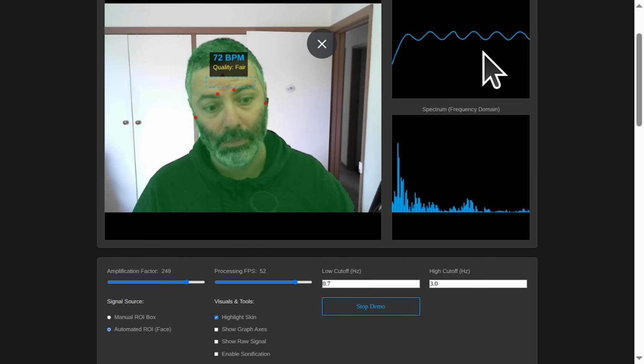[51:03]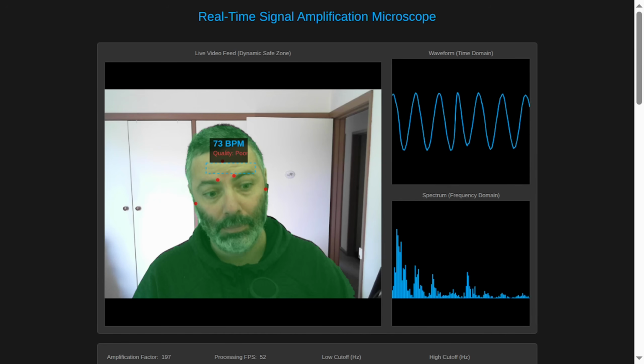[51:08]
Yeah, when I go to this play demo, it just fixes the image and it shows what the ideal signal would look like. So it's obviously fake. And it's fine now. It's also, when I ask a question, generating the conversation between Misha and Yojik. So we can generate the short podcast thing.
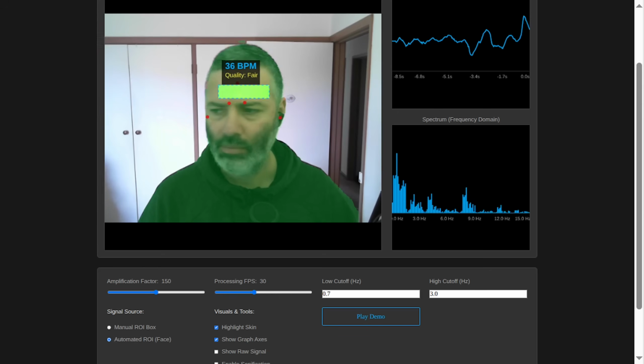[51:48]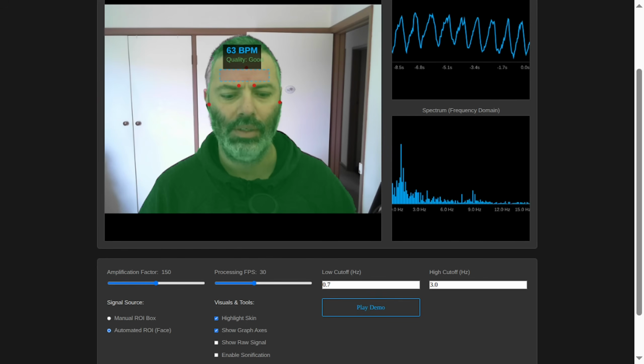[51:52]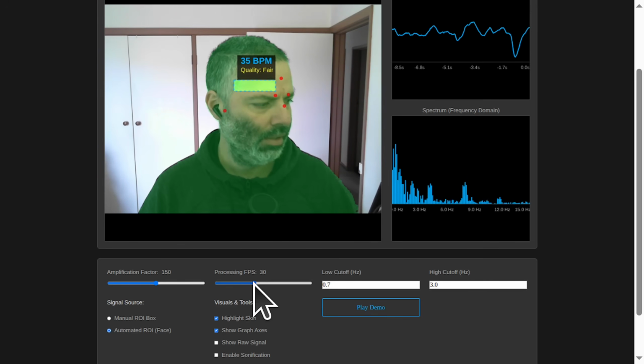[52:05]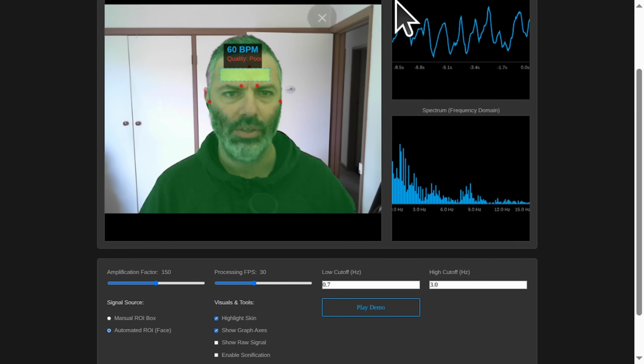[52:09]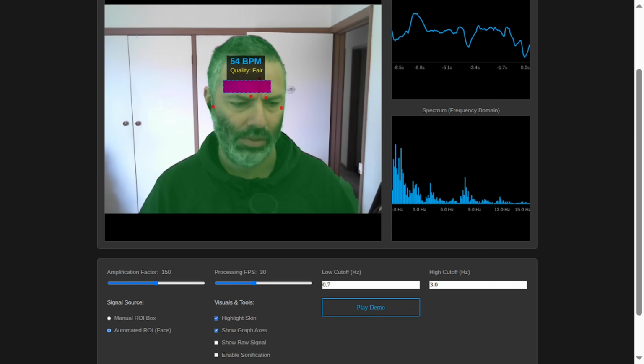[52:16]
Okay, so it corrected the FPS in the BPM calculation and made the dynamic ROI box. This is supposedly the complete code, meant to be around 500 lines. Is the box taller? It's not really taller. It is working okay though. 63 BPM is what I get. You get a good PPG, blood oxygenation signal. Now question. I don't know what it did there with the BPM. It doesn't seem right. Did I save it?
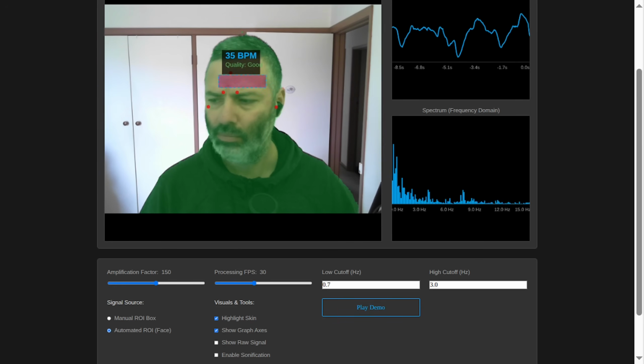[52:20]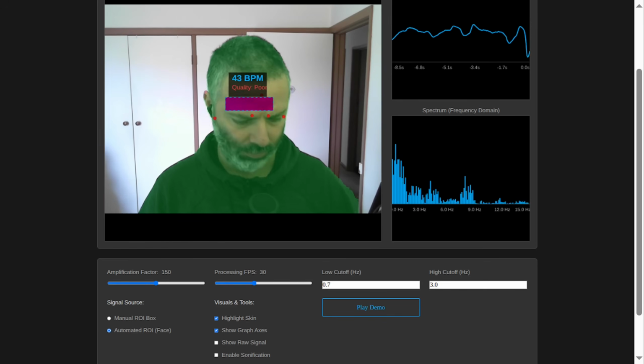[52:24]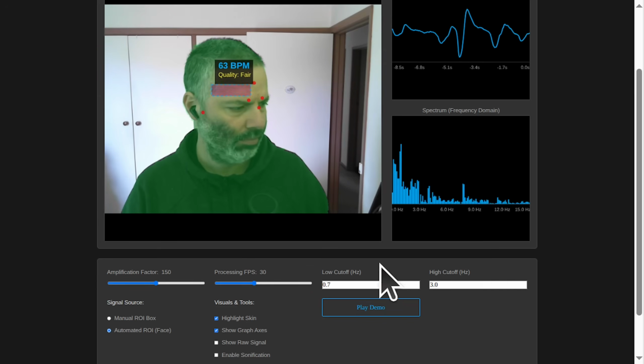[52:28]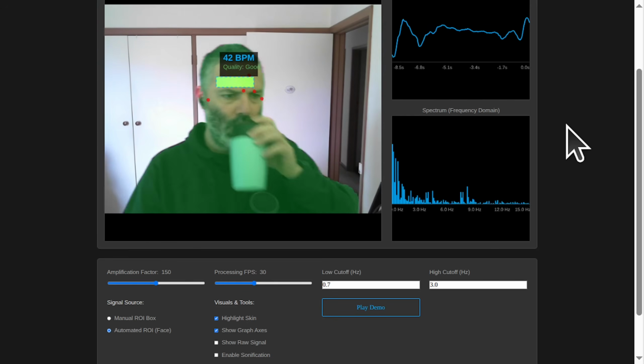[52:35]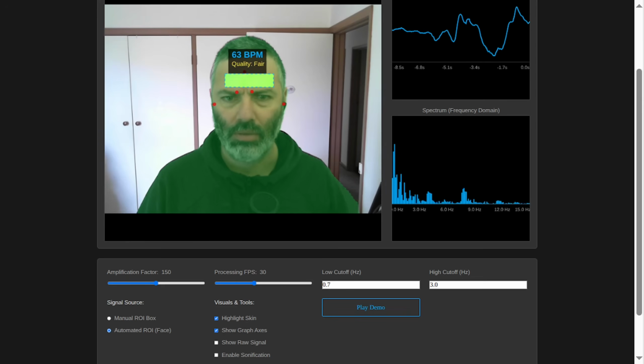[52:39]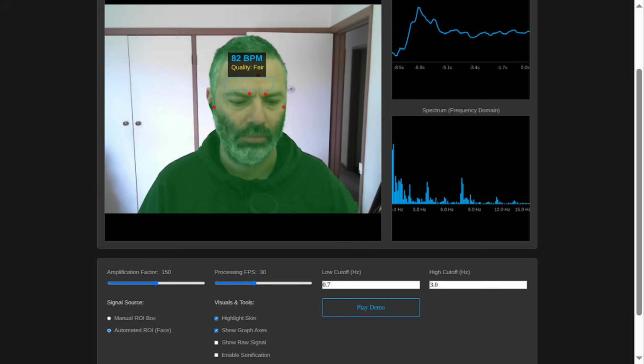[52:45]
Misha, we have a breakthrough. Look at that, 63 BPM, fair quality. We're in the ballpark of a living human. The dynamic box is a success. I'm practically ready to publish my findings in the Journal of Narcissistic Pulse Checking. That's fantastic! The spectrum graph is showing a much clearer peak. It's not perfect, but it's 100 times better than the noise we had before. But I see a thoughtful frown on your face, which, ironically, is what we designed the system to handle. What's on your mind? Two things.
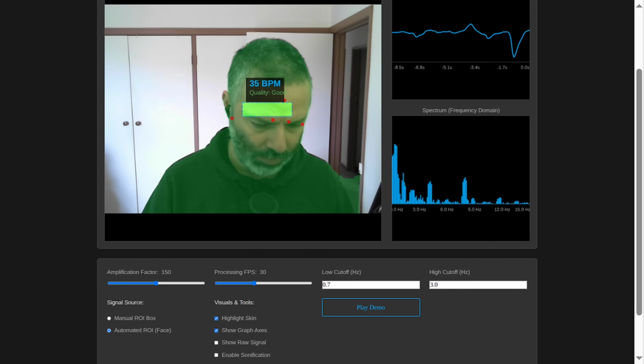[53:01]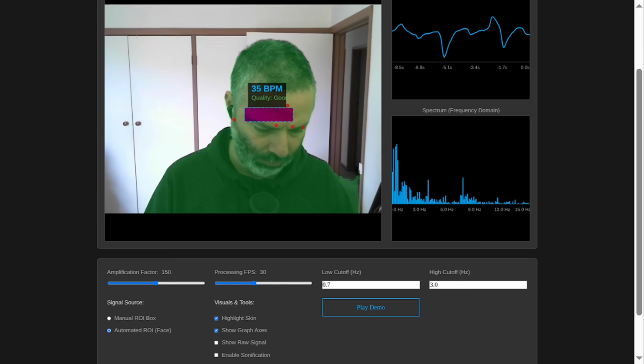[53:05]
First, a serious one. I was playing with the processing FPS slider. When I move it from 30 to, say, 50, the BPM reading goes haywire. It's like the mathematicians in the back room didn't get the memo about the new speed limit. They're still doing their calculations as if it's 30 FPS.
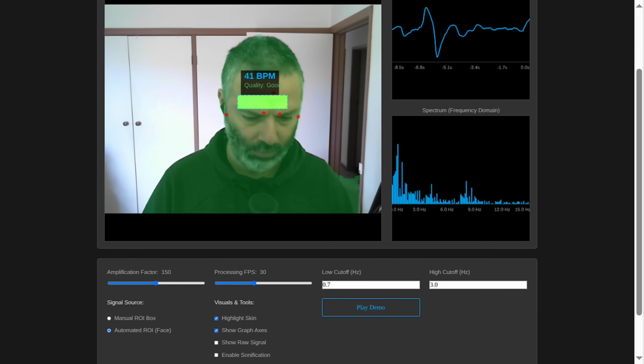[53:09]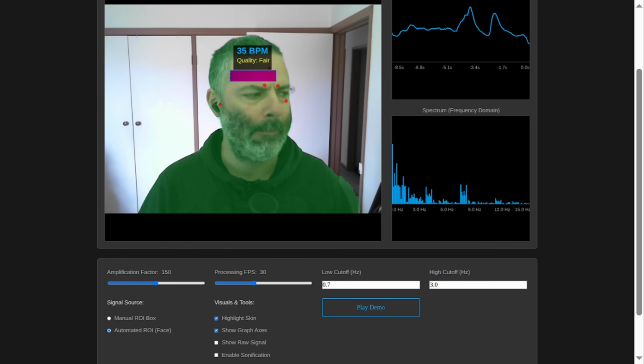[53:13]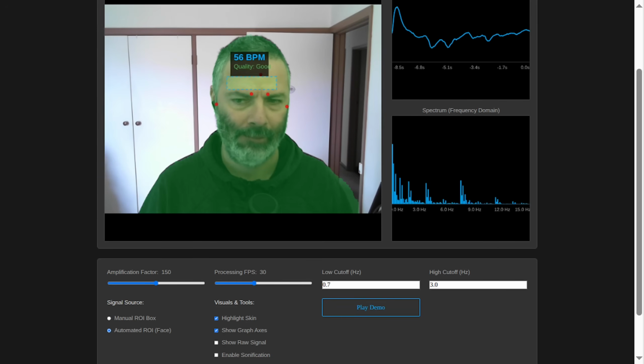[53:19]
You found a critical bug. That's an incredibly sharp observation. You're exactly right. If the FFT analysis thinks it's looking at a 30 Hz signal when it's actually 50 Hz, every frequency it calculates will be wrong. A 1 Hz peak would be misinterpreted and the whole BPM would be skewed. It's a simple fix, but absolutely vital for accuracy.
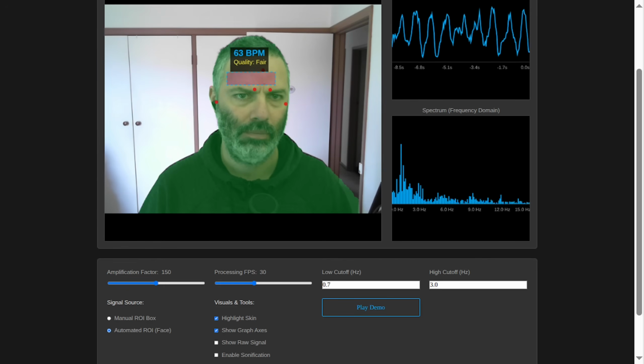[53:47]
We need to make sure the BPM calculator always asks the slider for the current speed limit before doing its math. Good. Now for my second point, a matter of aesthetics and performance. This blue box, it's a bit of a letterbox, isn't it? Very wide, but not very tall. I feel like we're ignoring a lot of premium grade A skin real estate in the middle of my forehead.
An excellent point. I can comment on that. We were being overly cautious. The logic we built creates a big box around your whole forehead, then shrinks it to create the safe zone. To avoid your angry eyebrows of doom, we told it to shrink a lot from the bottom, 35%. We were so scared of the eyebrows that we ended up with a short, narrow strip. We went too far, so we can just tell it to be a little less timid.
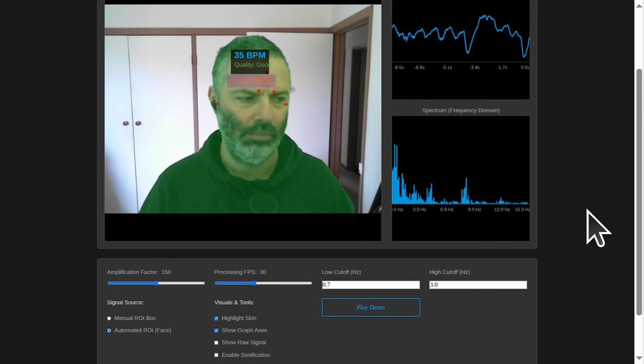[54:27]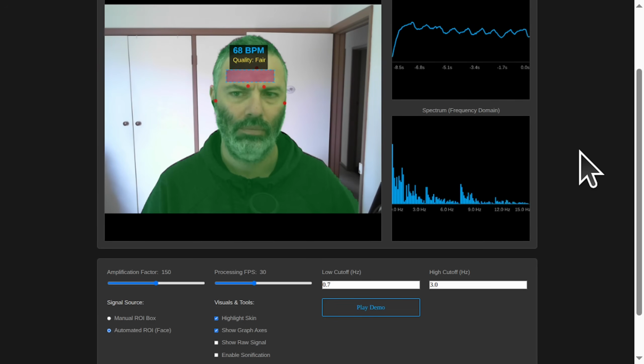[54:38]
Exactly. We'll adjust the inset ratios. We'll tell it to shrink less from the bottom, making the box taller. This will give us a larger sample area, which, as we discussed, is fantastic for smoothing out camera noise and getting a stronger, more reliable signal. We'll just make sure it's not so tall that it gets into trouble with the eyebrows again. Perfect. A taller, smarter box, and mathematicians who check the speed limit. Let's make it happen.
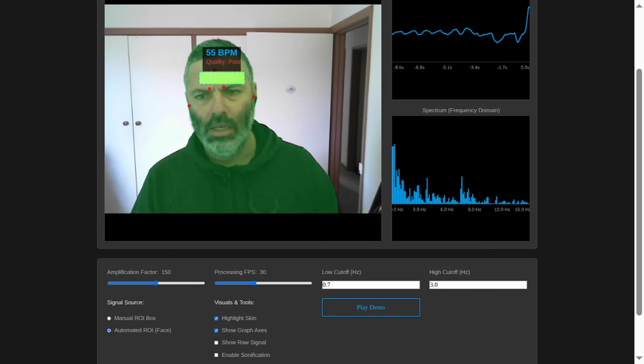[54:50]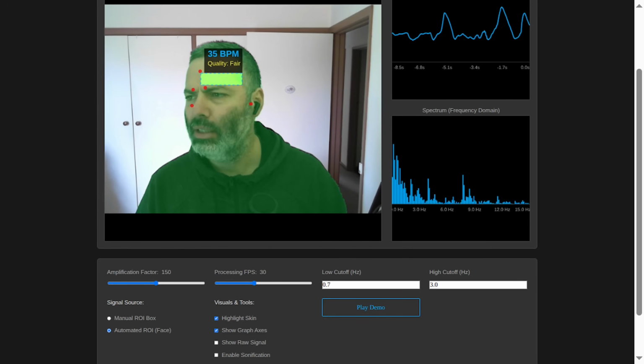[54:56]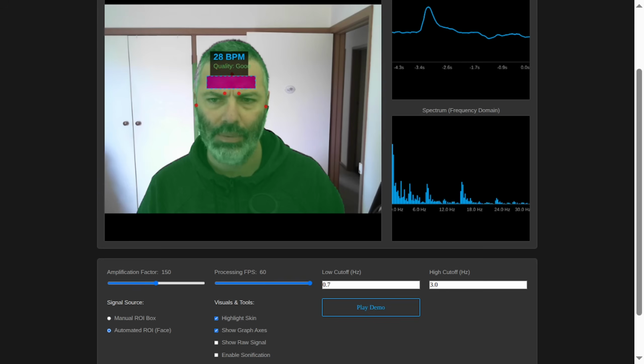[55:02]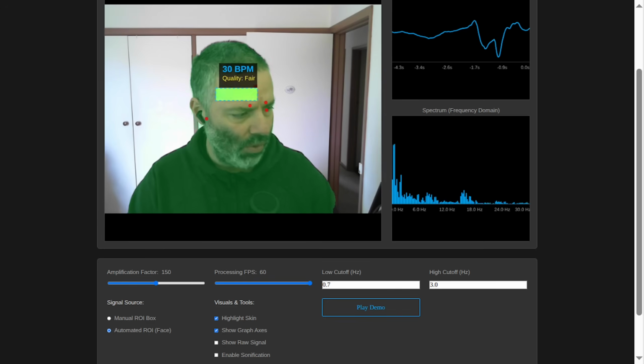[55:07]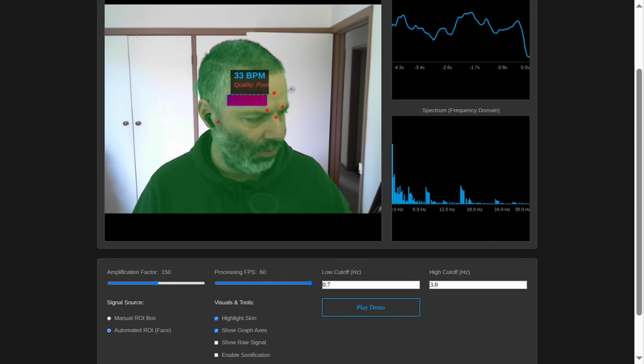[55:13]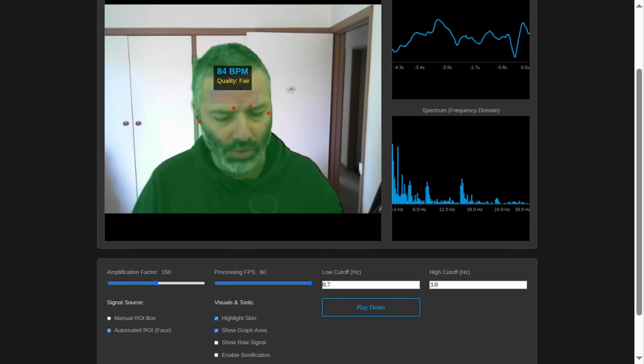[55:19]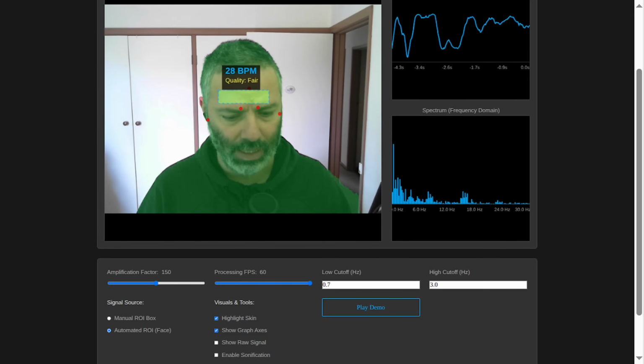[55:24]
Yeah, we're getting closer. We have automated face detection. We still didn't actually fix the FPS selection. The fix for a different processing FPS doesn't seem to work. So we still need to fix the BPM calculation. Also, the box seemed to be still too narrow, like a letterbox opening, and also it seemed to be too low, so potentially too close to the eyebrows. Can we fix that?
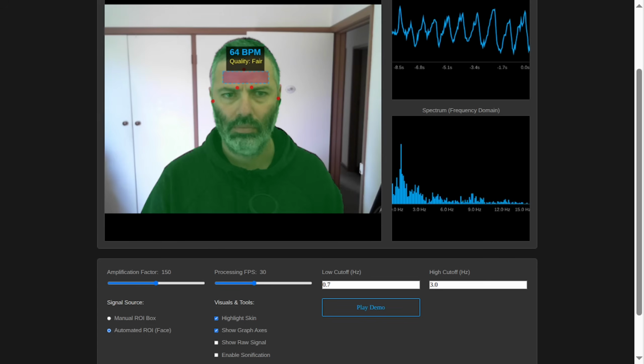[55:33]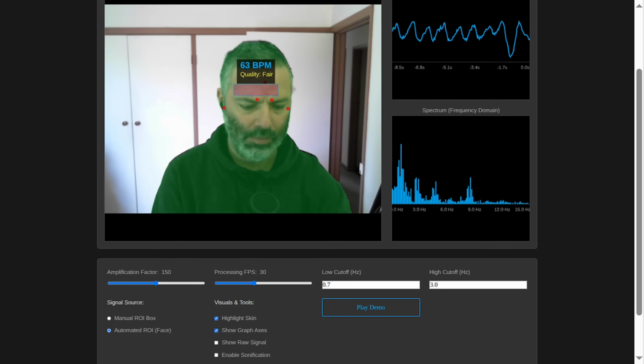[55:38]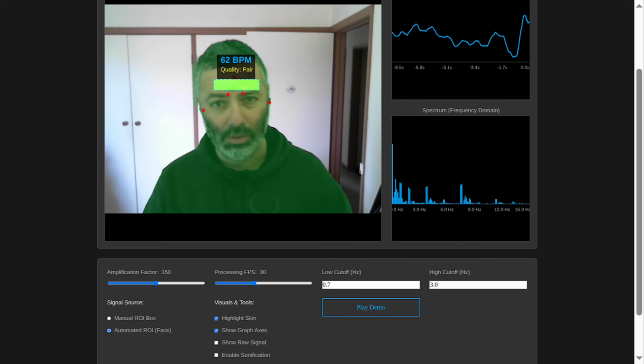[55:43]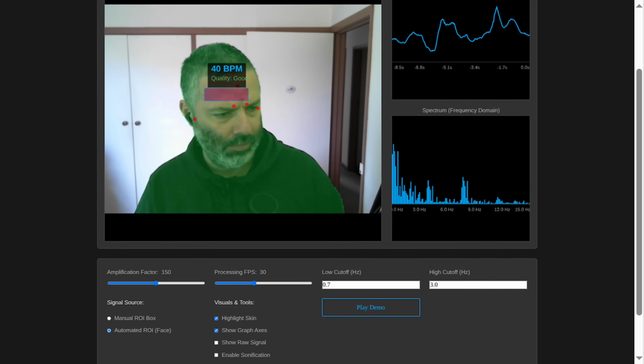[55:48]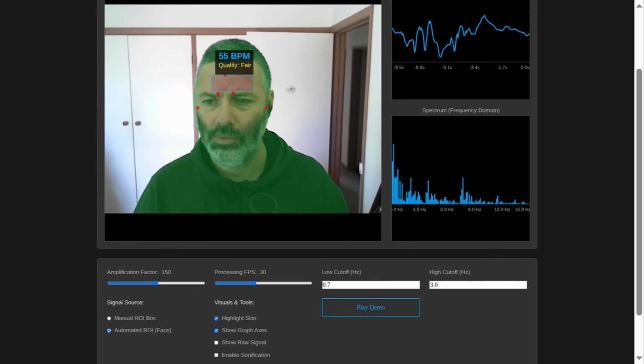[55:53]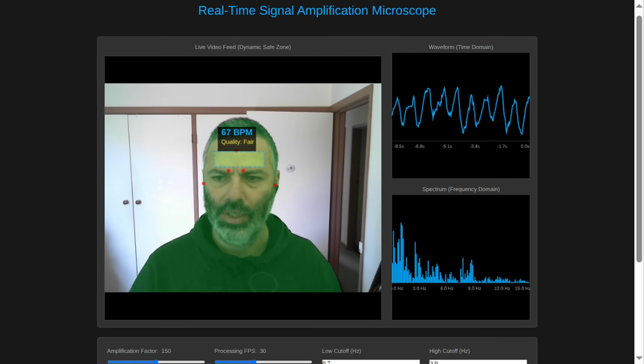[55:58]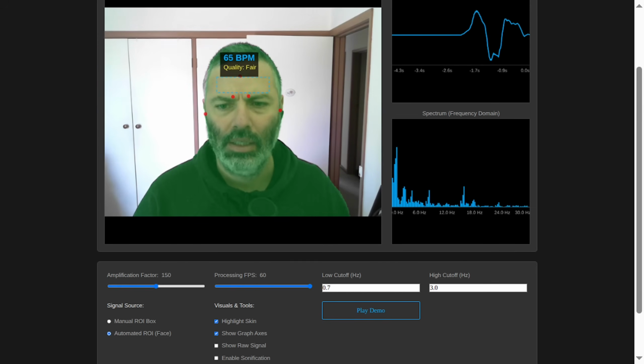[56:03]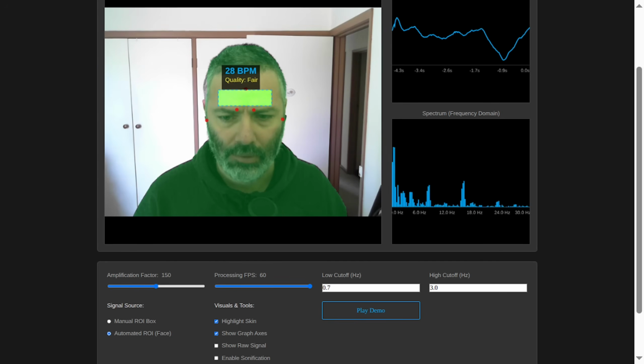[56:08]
It's a nice and strong signal. 63 BPM is correct. So we don't need a garment anymore. Don't need a wearable anymore. You can just use a camera. The eyebrows don't seem to affect it. Okay, we'll get a good reading. If we set it to 60 FPS, we should have the same reading.
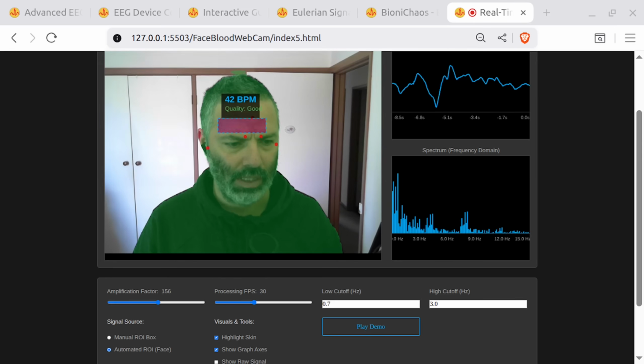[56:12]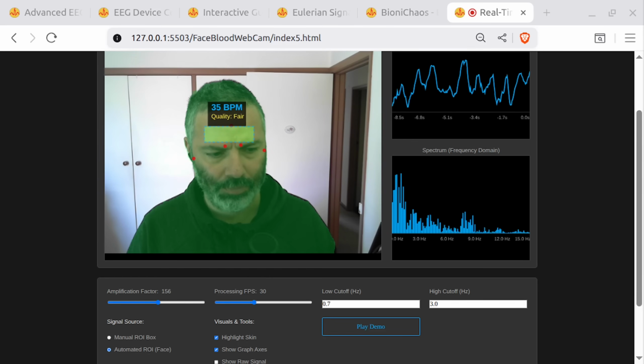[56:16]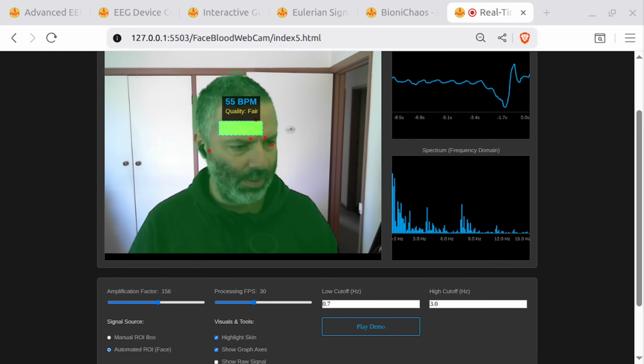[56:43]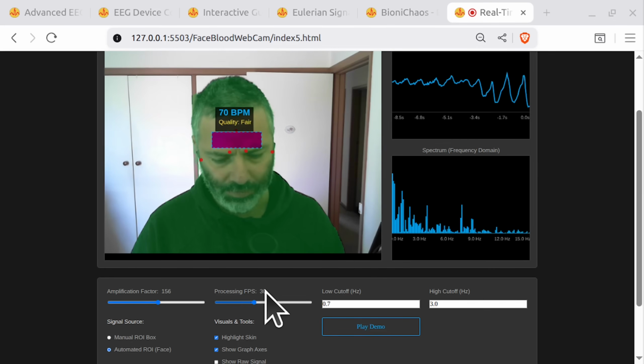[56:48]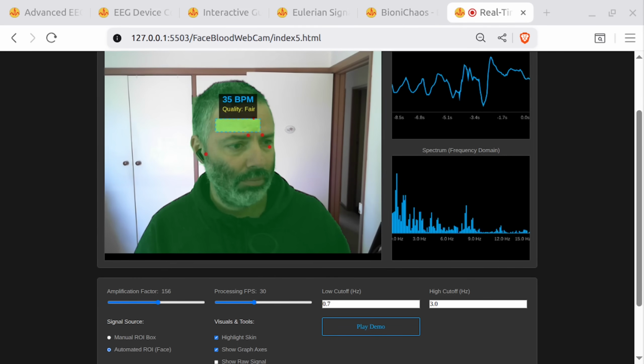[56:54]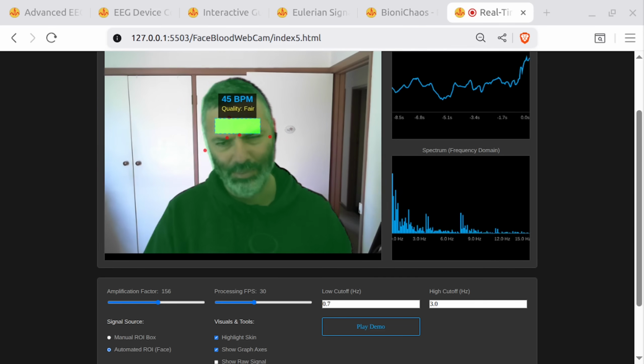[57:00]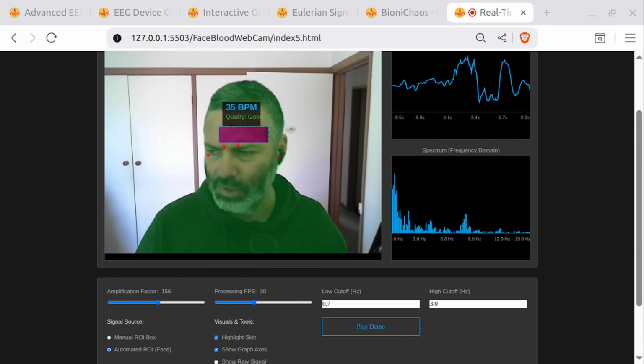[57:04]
I'm thinking of removing the FPS slider. We tried fixing the BPM calculation to take into account the FPS slider, the processing FPS. It seemed to only work with the default 30 frames per second. So can you find where the error is happening? Or shall we just remove that slider? What do you think? I found a problem somewhere. Right, because when we changed the FPS, it wasn't resetting some things that need to be reset. Supposedly it made the ROI box a bit higher and more confident, whatever that means. More confident. It's a box. Our box can be more or less confident.
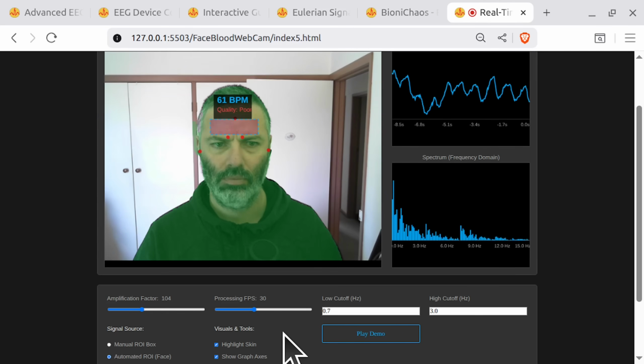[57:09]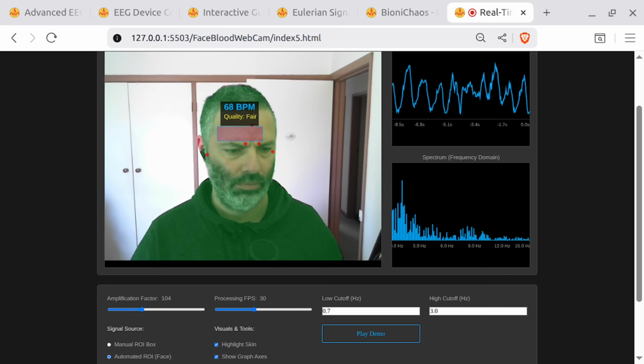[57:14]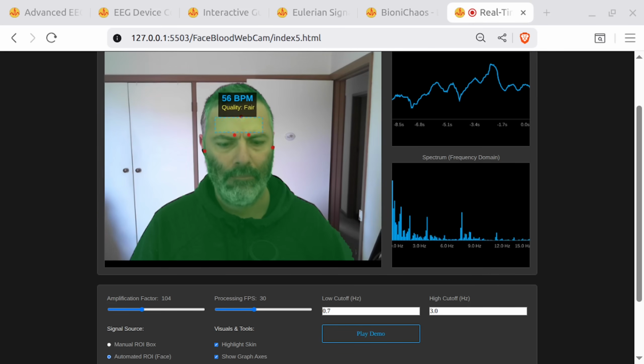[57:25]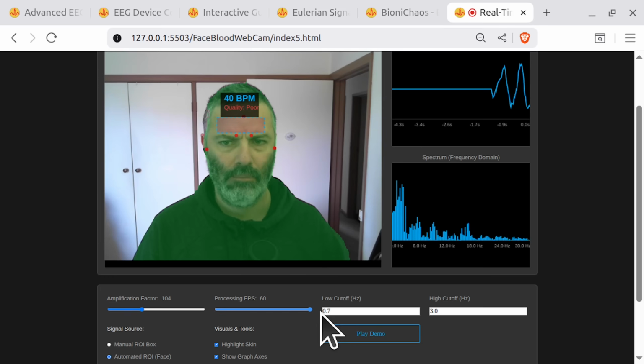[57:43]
Misha, my friend, I've got good news and bad news. The good news is the patient has a pulse, 67 BPM at 30 FPS. We're in business. The bad news is when I crank the FPS up to 60, his heart rate magically jumps to 74 BPM and the quality plummets. He's apparently having a panic attack about being processed faster. You found it. The stubborn bug. My apologies, my last analysis was incomplete. The calculation formula was correct, but I missed a more subtle problem. It's a classic state management issue.
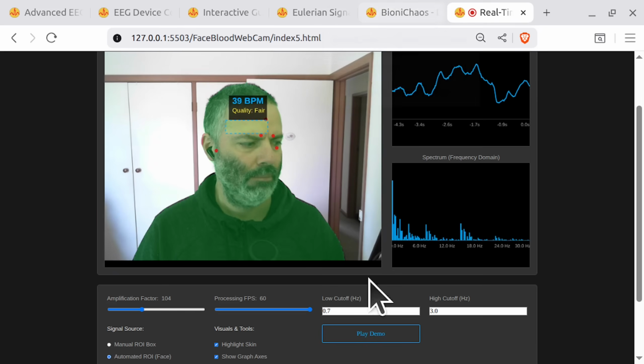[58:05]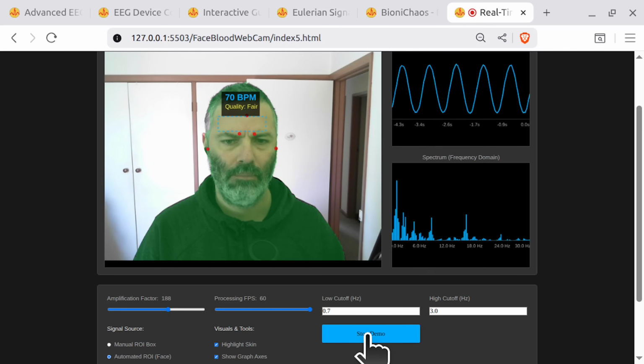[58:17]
State management? It sounds like you're blaming the government. Haha, not quite. Think of our signal filter like a person running on a treadmill. When you suddenly crank the speed from 3 to 6, they flail for a few seconds before finding their rhythm. The filter is doing the same thing. When you change the FPS, the filter's internal memory is full of data from the old speed. It produces a massive chaotic flail signal as it tries to adjust. The FFT sees this huge flail and thinks it's the heartbeat. So we're measuring the filter's panic attack, not mine.
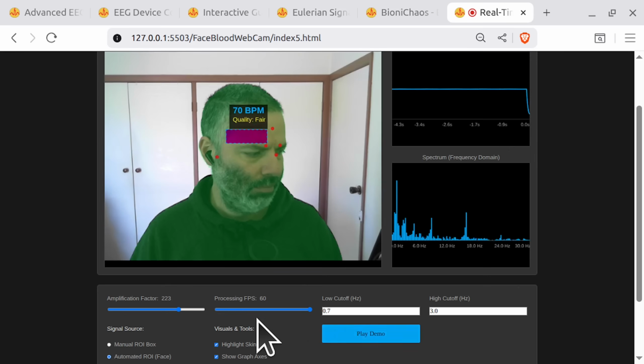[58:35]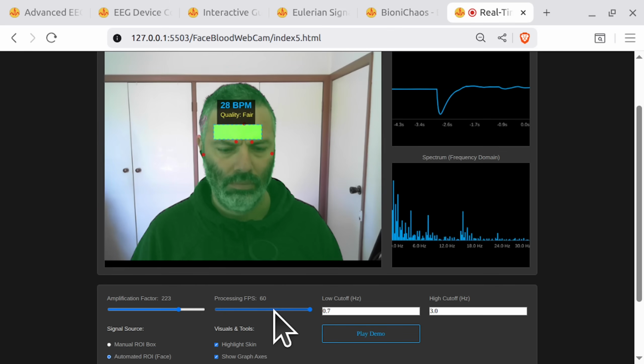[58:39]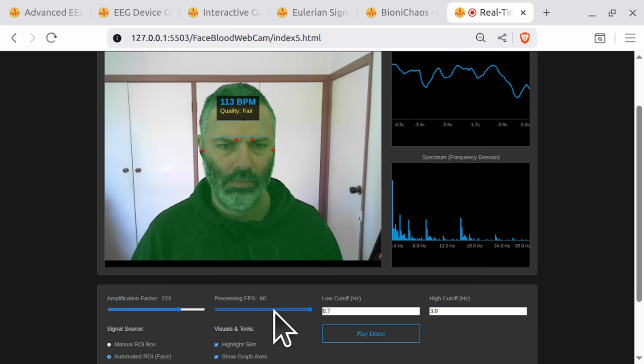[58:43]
What's the fix? It's simple now that we see it. When the user changes the FPS, we need to perform a full system reset. We shout, "Everybody out of the pool." We throw out all the old signal data in the buffers, and most importantly, we give the filter a fresh start by completely recreating it. That way it starts clean at the new speed, with no memory of the old one.
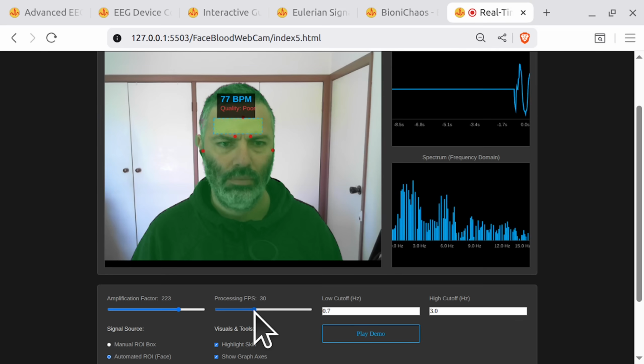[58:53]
A full system flush. I like it. Now, about this box. We made it taller, but you're right, it's still a bit low and narrow. It looks like it's wearing a very tight headband. It should be more like a confident crown. I agree. Our last adjustment was too timid. We were so worried about the eyebrows that we didn't give the box enough room to breathe. We need to be bolder.
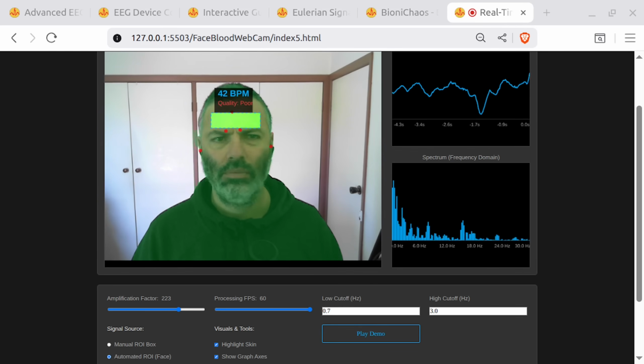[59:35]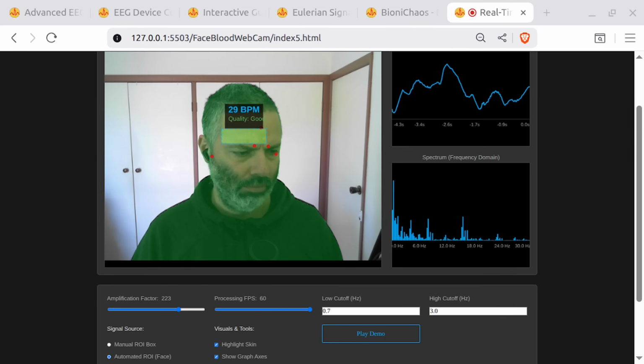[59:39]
We'll tell the algorithm to shrink much less from the top, pushing the box higher up the forehead. And we'll shrink a little less from the bottom too. This will give us a taller, more confident crown that captures an even larger, more stable patch of skin. A taller, higher crown for a more regal and accurate BPM. And a system flush for the panicky filter. This feels like the final boss battle for this project. Let's win it. Here is the final code.
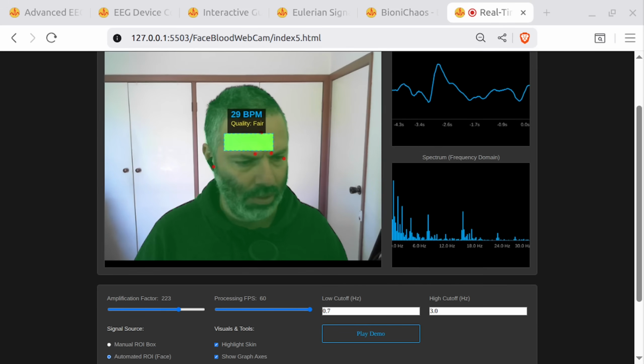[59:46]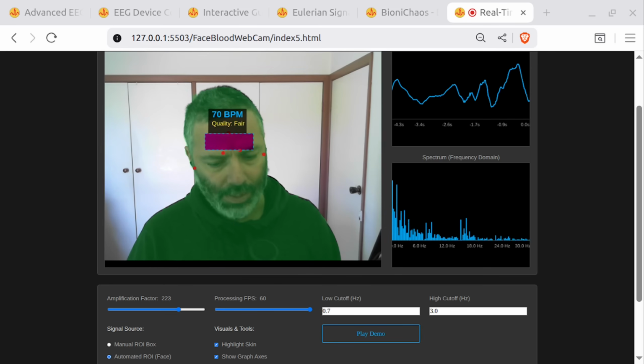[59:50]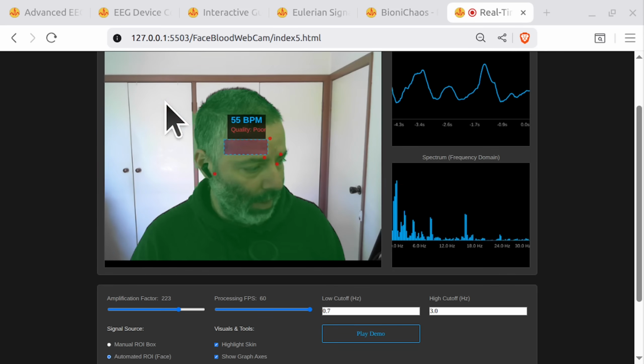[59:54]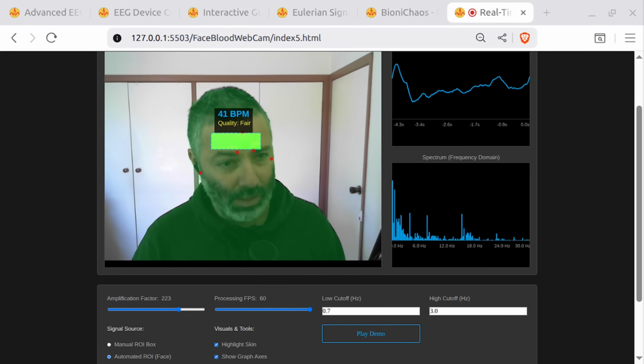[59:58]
Okay, we are winning it, but there's still a few annoying little problems. Hey, can you check the two images? The only thing we're changing is the selected processing FPS from 30 to 60, and that seemed to mess up the BPM output. Can you check the code? Let us know what's happening, what's going on.
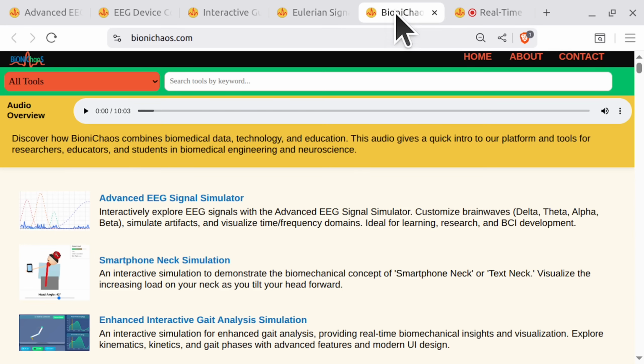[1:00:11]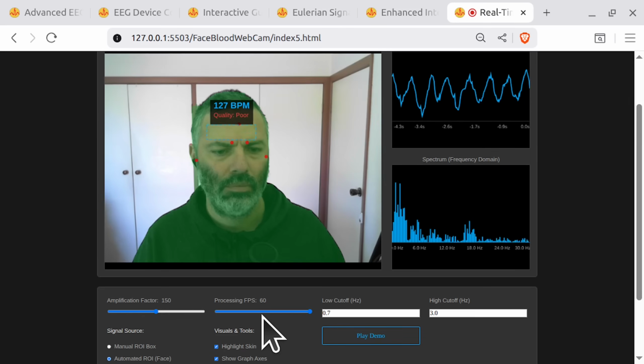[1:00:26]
Oh, this is wrong. I don't know why it can't solve such a simple thing. Misha, my friend, I've run the experiment. The results are in. At 30 FPS, my heart rate is a calm 70 BPM. At 60 FPS, it's a frantic 111 BPM. The only thing that changed was the slider. This machine thinks that processing me faster gives me a panic attack.
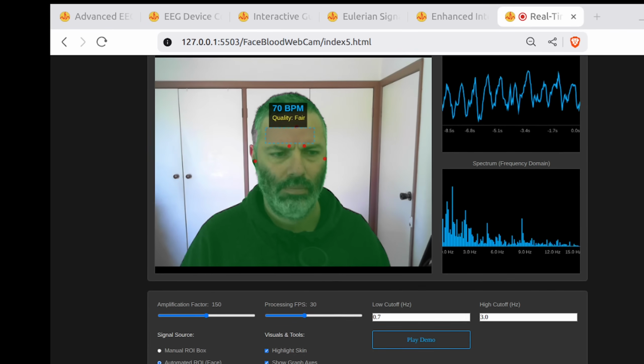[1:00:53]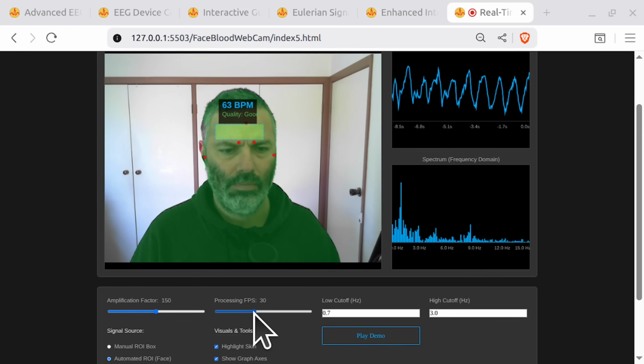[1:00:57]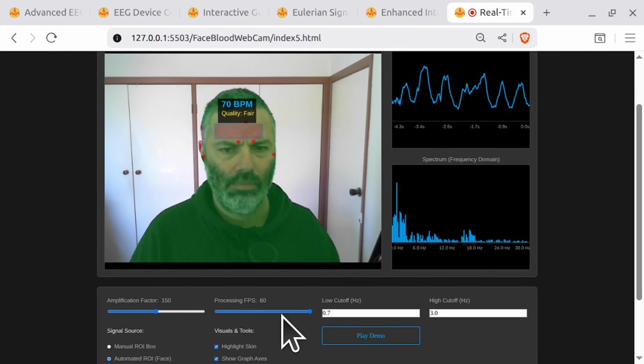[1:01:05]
You found it, the stubborn bug. My last analysis was incomplete, and my apologies for that. This is the smoking gun. It's a classic state management problem. It sounds serious. Are you telling me the filter has commitment issues? Worse, it has memory issues.
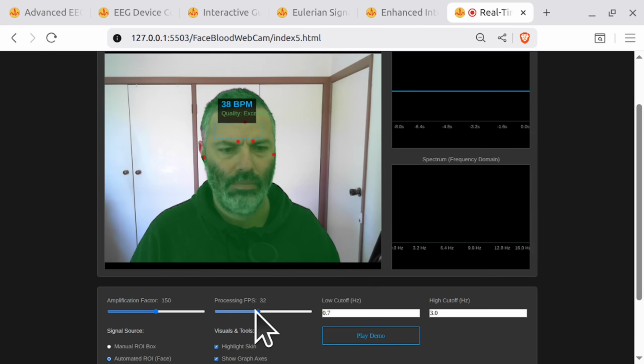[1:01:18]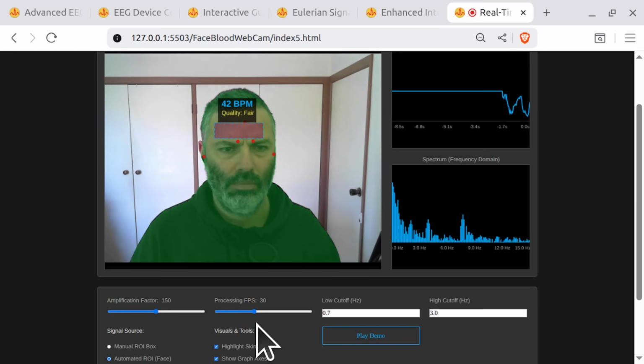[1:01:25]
Think of our signal filter like a person running on a treadmill. They have a history, a memory of their last few steps. When you suddenly crank the speed from 3 to 6, they flail chaotically for a moment before they find their rhythm. I know the feeling. The filter is doing the exact same thing. When you change the FPS, we've been telling it, hey, use these new speed parameters, but we never told it to forget its past. Its internal memory is still full of data calculated at the old speed. That mismatch creates a massive, chaotic flail in the signal.
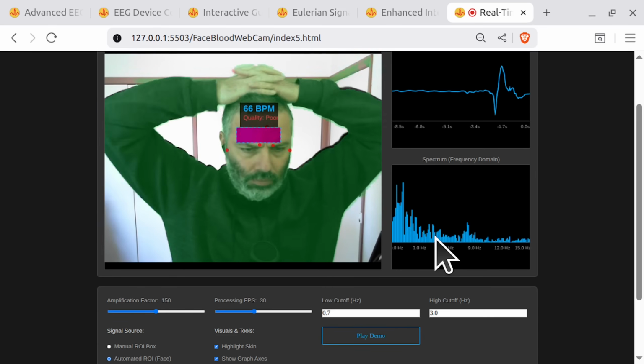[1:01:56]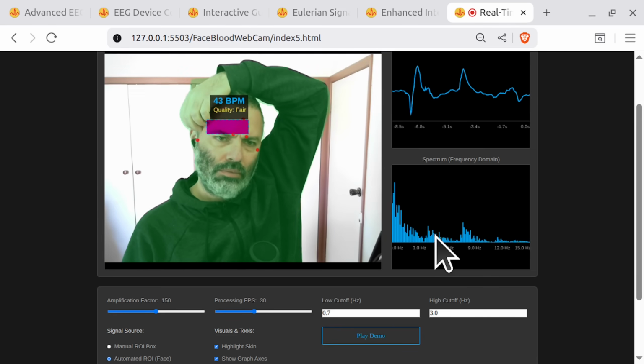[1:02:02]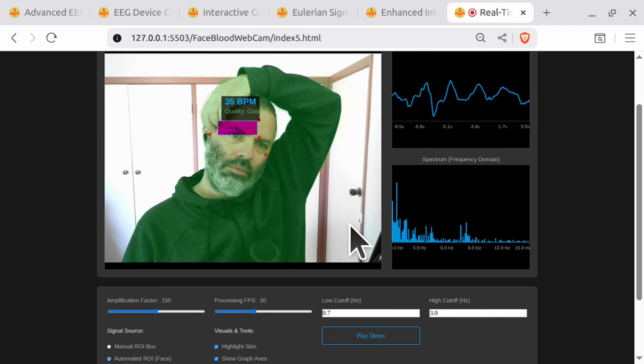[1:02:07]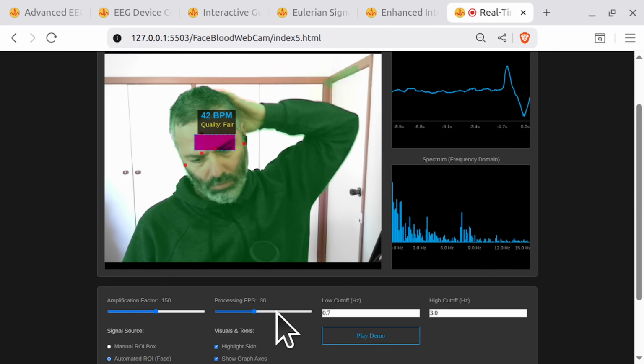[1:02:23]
The FFT sees this huge spike and misinterprets it as a very fast heartbeat. So we're not measuring my pulse, we're measuring the filter's panic attack. How do we calm it down? We don't calm it down, we give it a brain wipe. When the user changes the FPS, we have to perform a full system flush. We can't just update the old filter, we have to destroy it and create a brand new one from scratch. We also have to empty all the signal buffers. This forces a completely clean start at the new speed with no memory of the past. A total reset. Brutal, but effective.
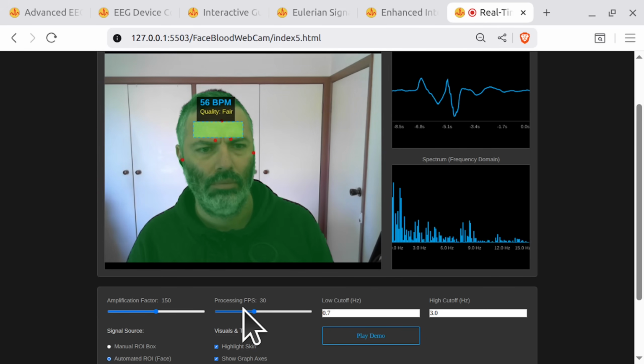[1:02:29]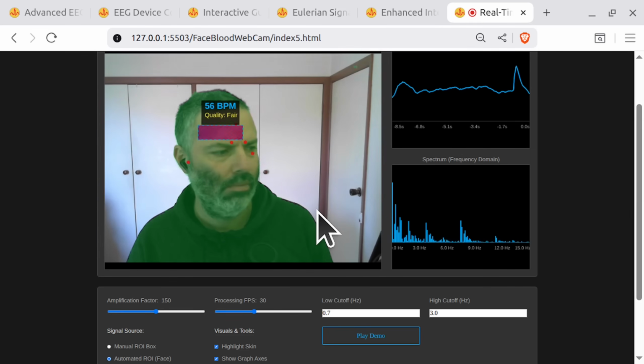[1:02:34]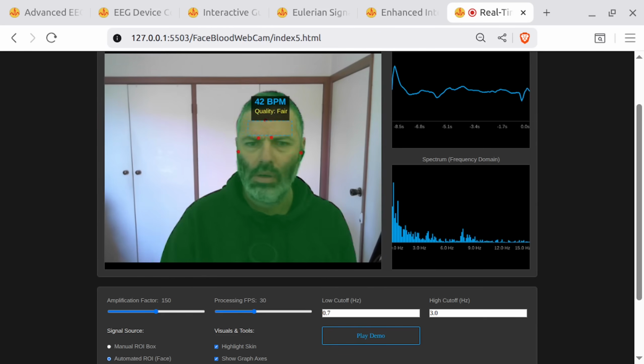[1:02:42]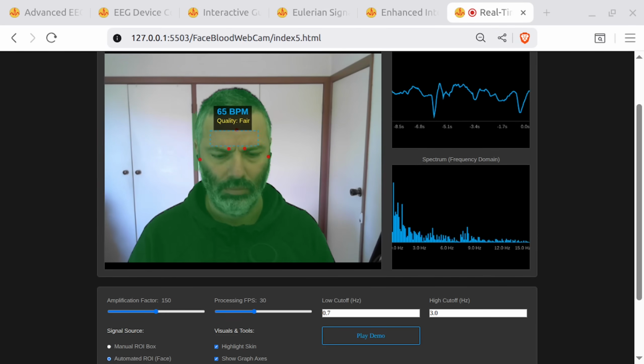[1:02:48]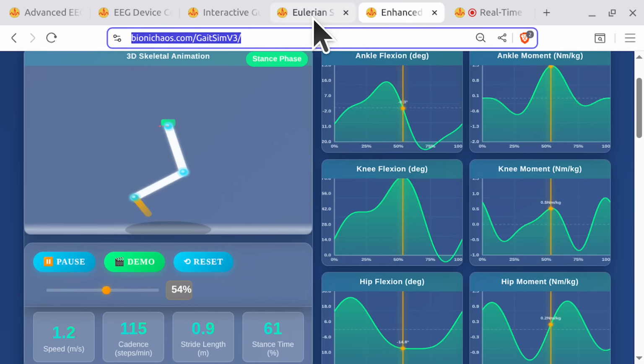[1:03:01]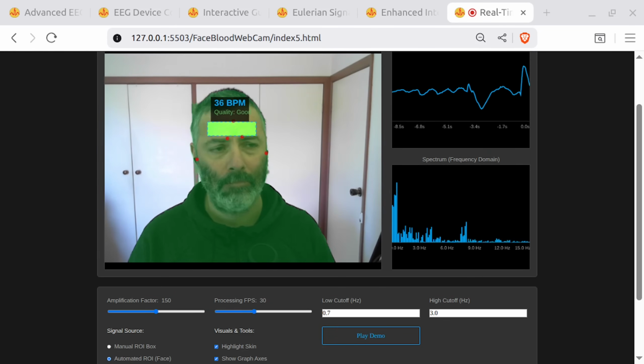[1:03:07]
Now about this blue box, we made it taller, but it's still wearing its pants too low. It's practically sitting on my eyebrows. It needs to be a proper crown, not a headband. You're right. We were still being too timid. We were so afraid of eyebrow wrinkle noise that we kept the box too low. We need to be bolder and claim that prime, stable real estate in the middle of your forehead. We'll adjust the inset ratios one last time, shrinking much less from the top to push the box higher, and less from the bottom to make it even taller. A taller, higher crown for a more regal and accurate BPM, and a full memory wipe for the panicky filter.
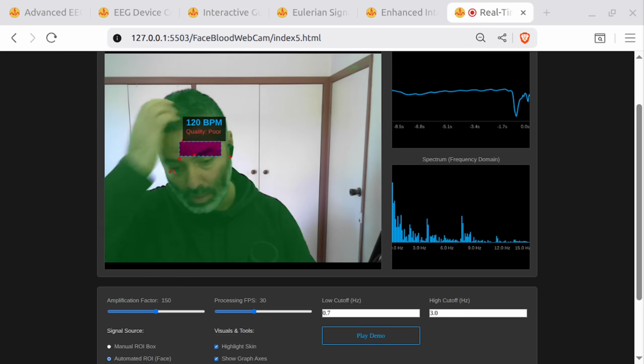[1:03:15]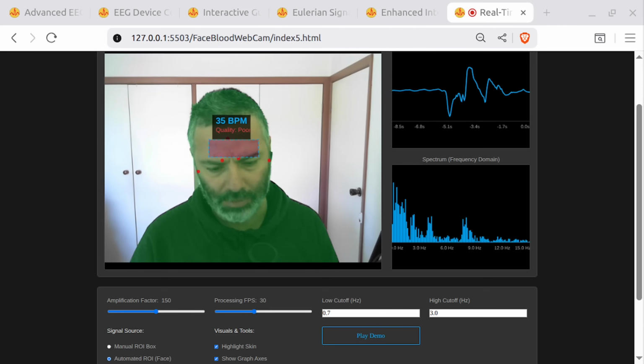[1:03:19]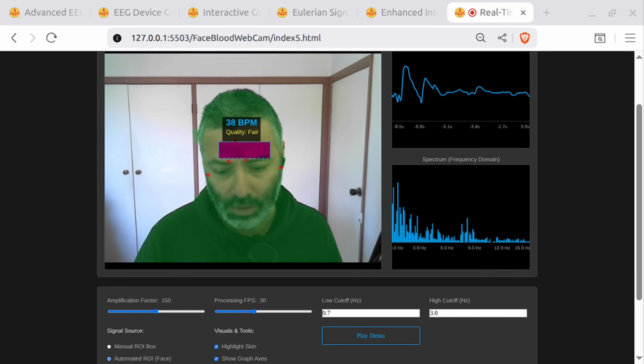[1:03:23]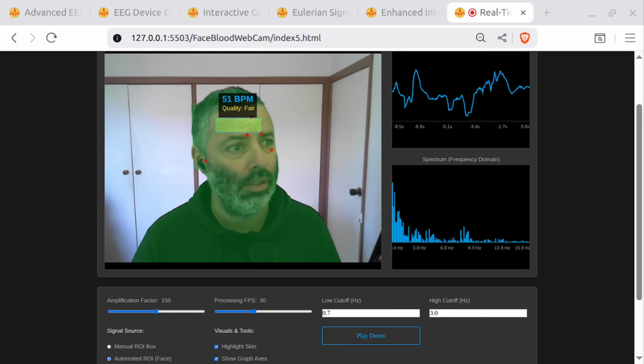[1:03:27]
This feels right. This is the one. I agree. This is the definitive fix. Let's deploy the final version. Anyhow, we'll check it, continue it next time. We'll check it, deploy the final version onto the site.
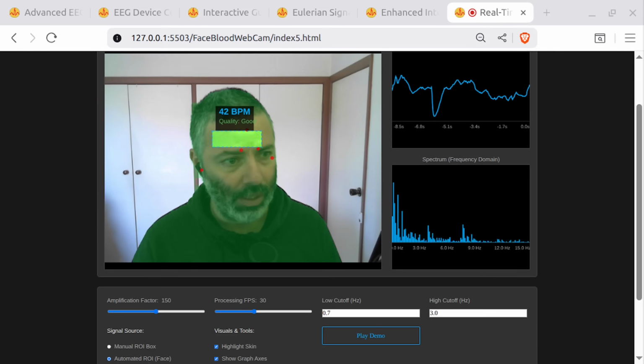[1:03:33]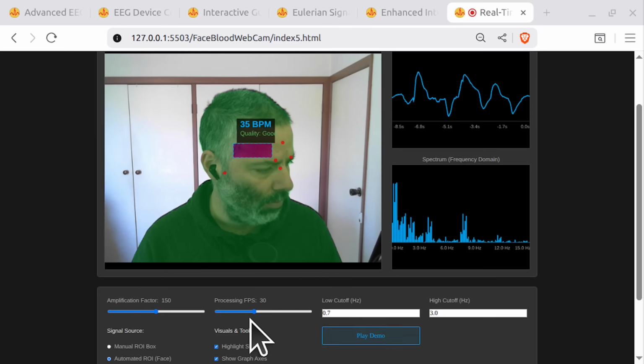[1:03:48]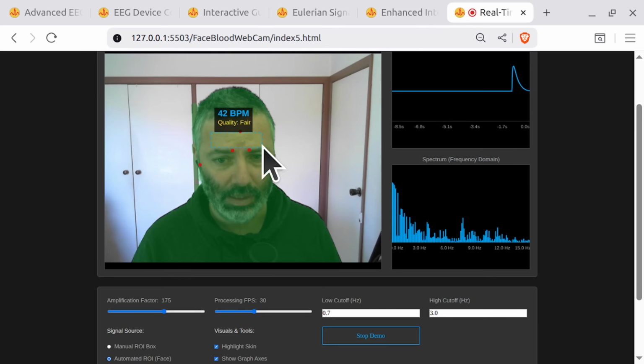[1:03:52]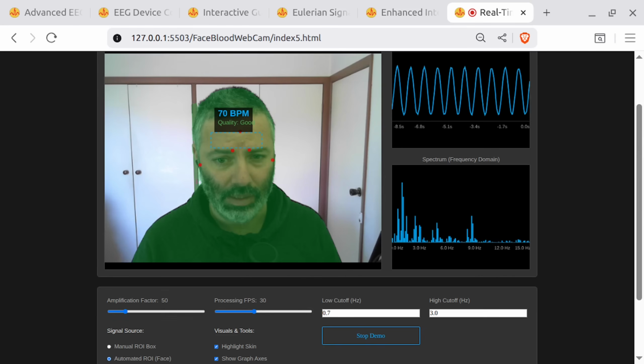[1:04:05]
And this is how it ideally should look. Some filter artifact there, and then we should get this, like an ideal waveform. Quality good. I think there's also excellent.
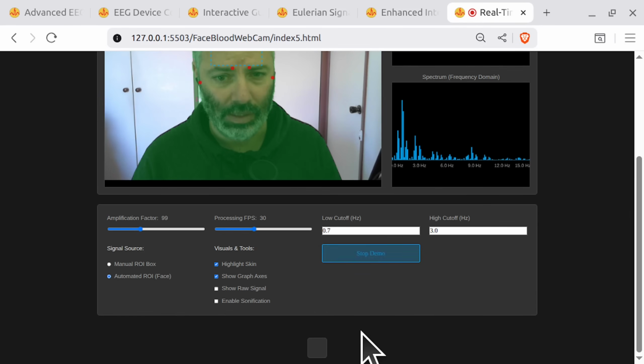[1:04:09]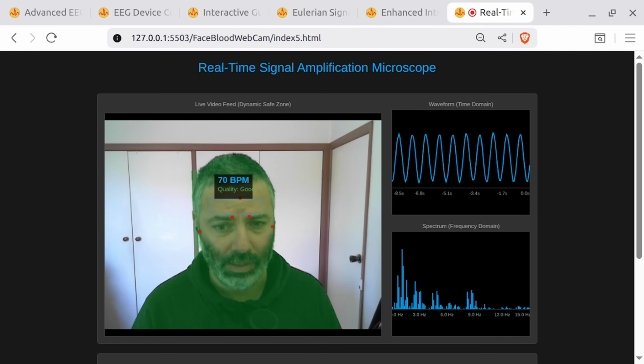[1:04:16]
Get rid of the description at the bottom of the page. And that's not cool.
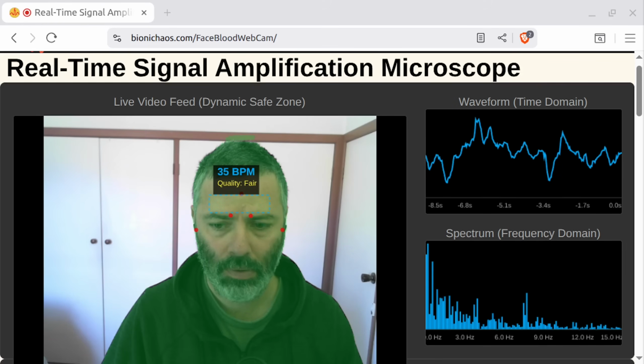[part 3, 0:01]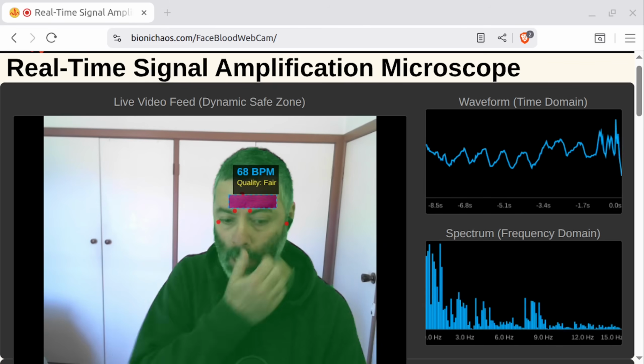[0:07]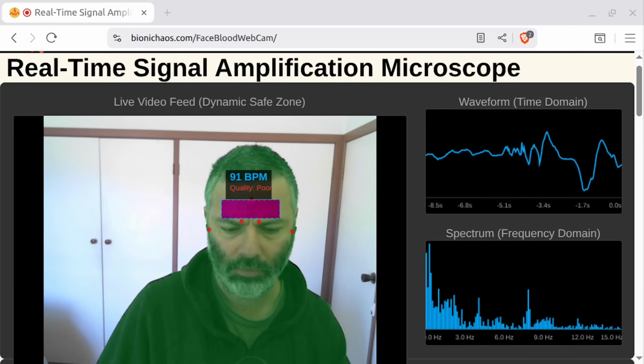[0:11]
A screen displaying a real-time signal amplification microscope. It shows a live video feed of a person with a heart rate of 35 BPM and fair quality, along with waveform and spectrum graphs.
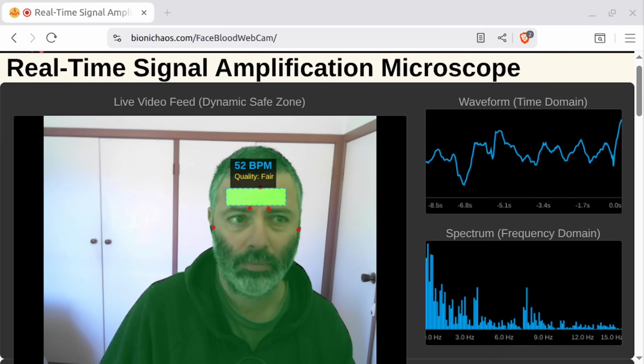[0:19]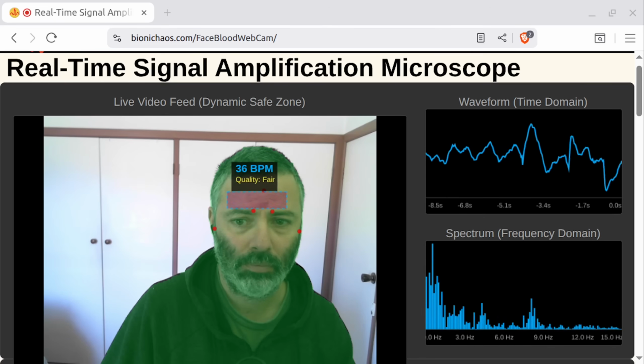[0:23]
So what do I do? What do I need to do for the quality to go higher? To get a higher quality reading, make sure you are well lit and minimize any movement. This will help the system capture a clearer signal.
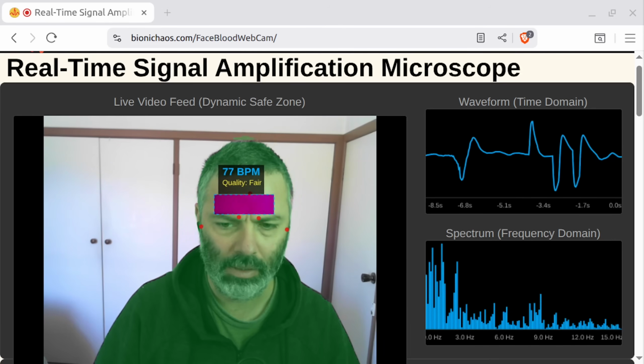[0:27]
Okay, is it better? Do you think it's better now? The quality is still listed as fair. Perhaps try adjusting the lighting again or moving closer to the camera. Is there any other movement in the background? Okay, how about now? The quality is still listed as fair.
Ensuring good lighting and minimizing movement are the most important things to improve the reading. Is there anything else you can adjust in your setup? Can you look at the video footage for a bit longer? The signal quality is actually good, judging by the waveform. And we are locking in on the spectrum at some stages on the frequency.
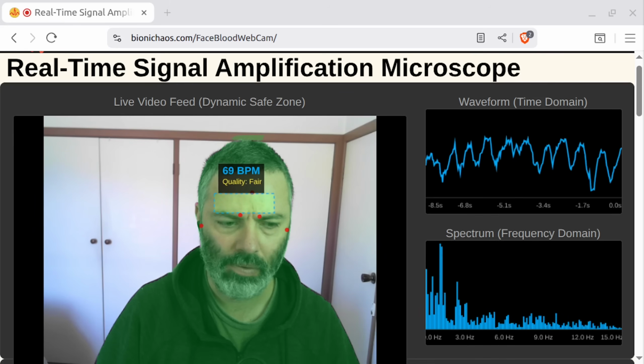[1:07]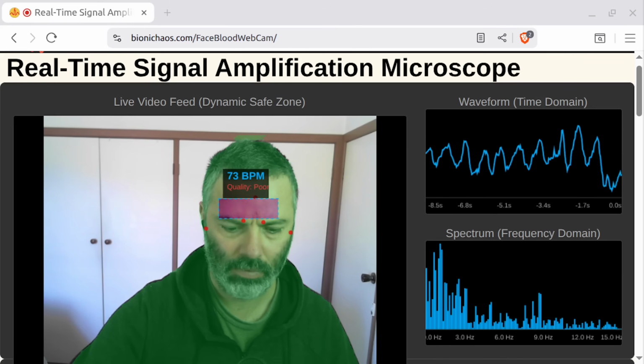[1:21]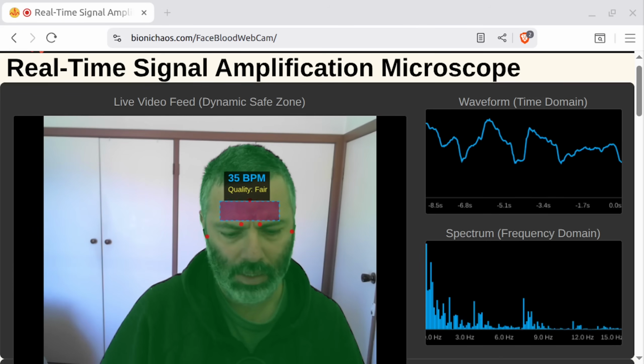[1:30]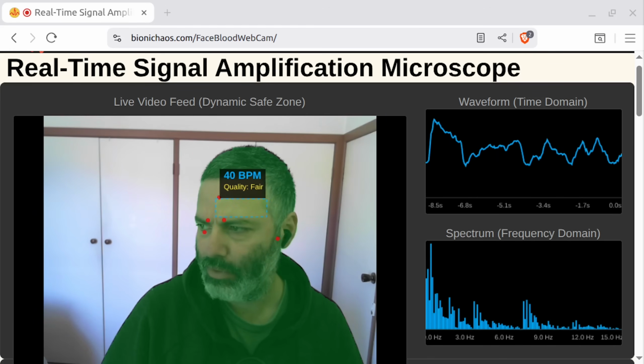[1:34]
The quality in the video footage appears to fluctuate between fair and poor, but you're right, the waveform and spectrum graphs sometimes show a clear signal. How about now? It is currently listed as fair. The waveform does look more regular now. It is working. I don't know, the quality indicator is a bit too harsh, I believe.
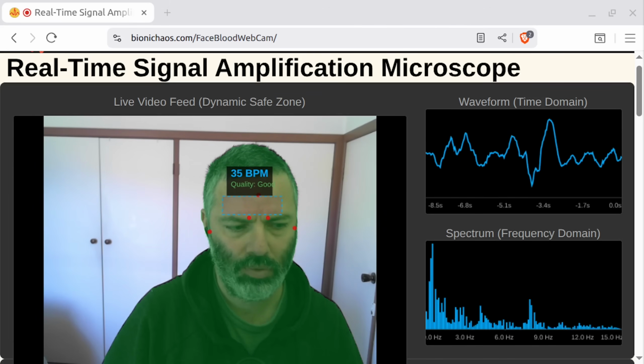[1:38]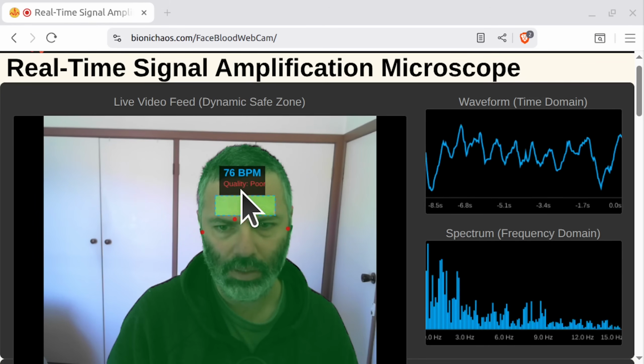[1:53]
I understand you're concerned about the quality indicator. It's important to remember that it's just one aspect of the reading. The waveform and spectrum graphs also provide valuable information. Yeah, it seemed a bit too harsh. When we do have a good signal, the quality is still fluctuating quite a bit.
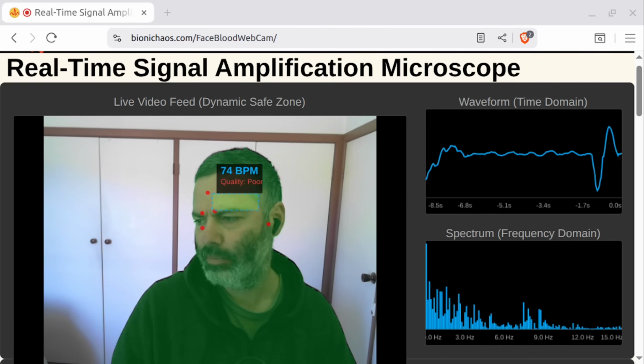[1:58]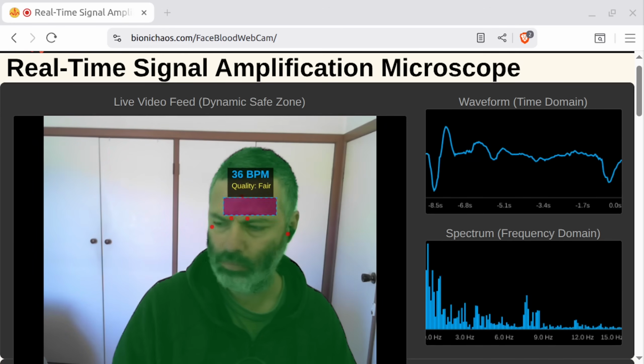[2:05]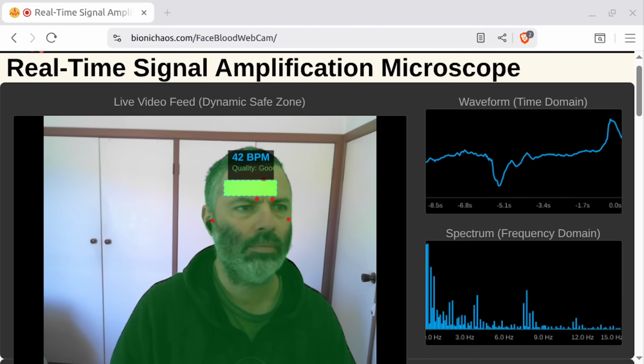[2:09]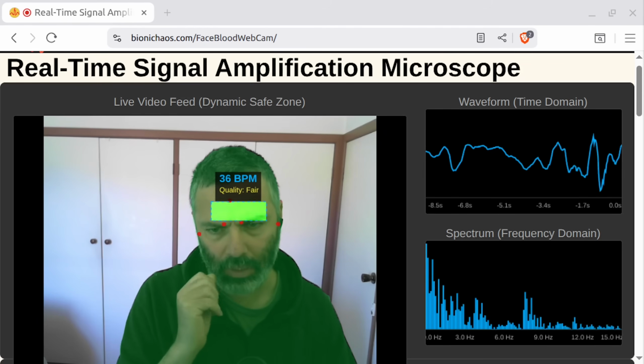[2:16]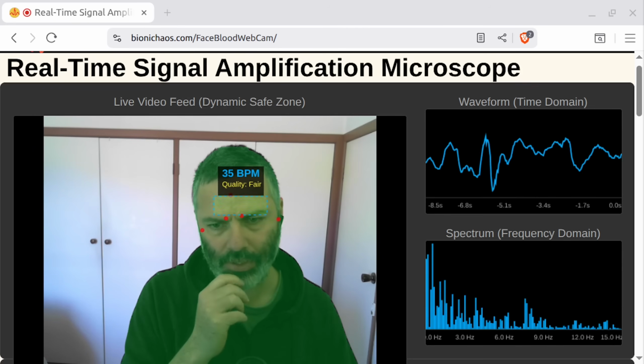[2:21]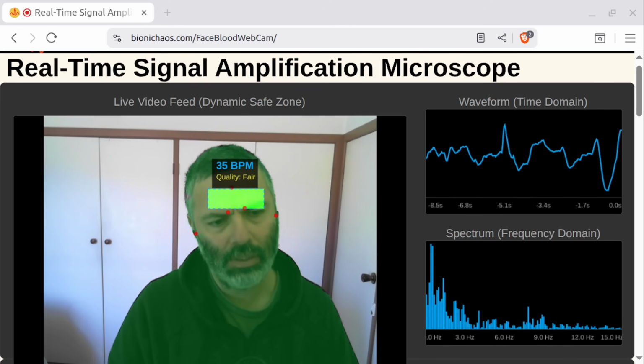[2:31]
I was suggesting that smoothing the quality indicator updates would make it less jumpy, and adjusting its size or padding could help it fit within the box. Also, ensuring the ROI position stays in the safe zone could improve the data quality. Hey, can you write a prompt for the developer to fix the ROI location position? Also, move it a bit higher so it avoids the eyebrows.
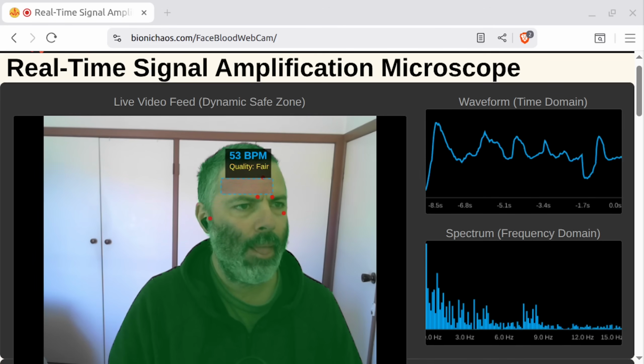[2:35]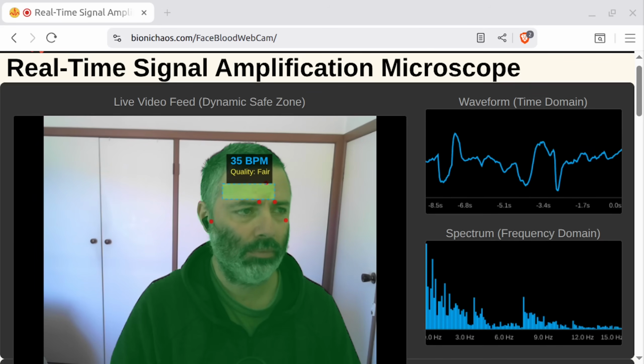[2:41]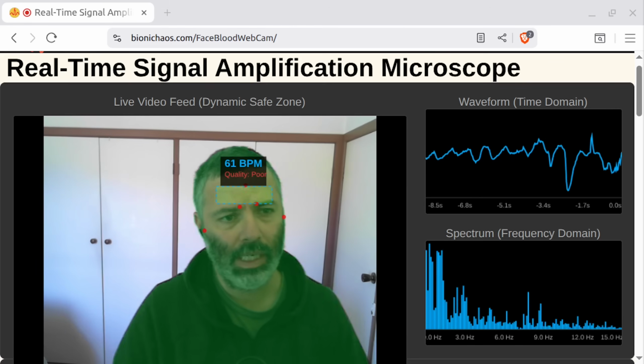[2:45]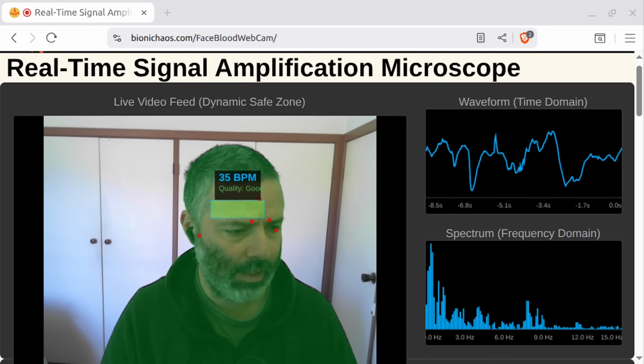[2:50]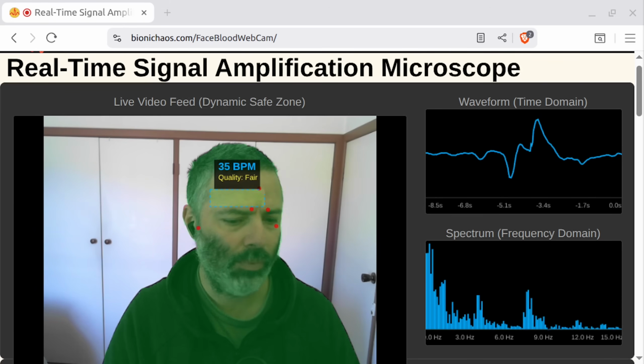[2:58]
Sure, here's a prompt for the developer. Please adjust the position of the ROI so it is higher on the forehead, ensuring it avoids the eyebrows. Would you like me to include anything else? How would you go about it when the head is tilted? Adjusting the ROI to account for head tilt would require detecting the head's orientation and programmatically adjusting.
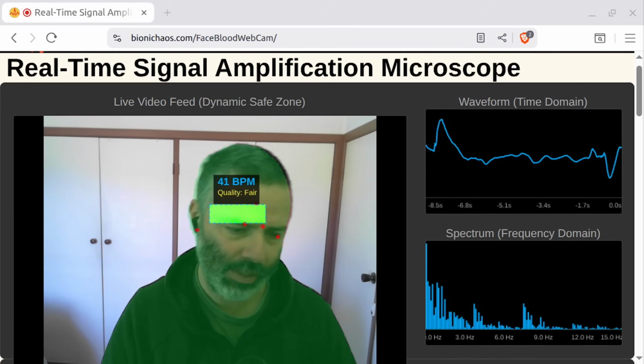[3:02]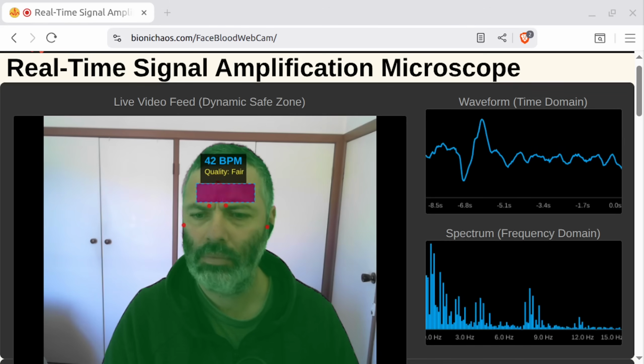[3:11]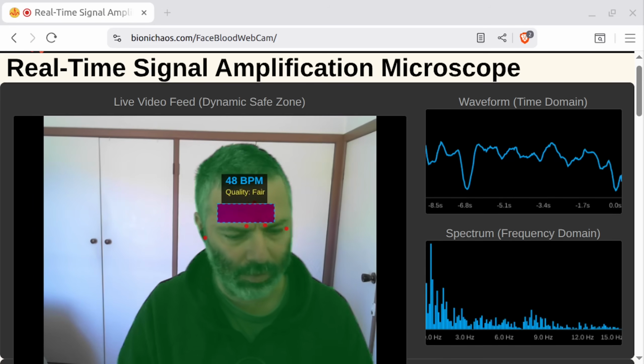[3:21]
We are detecting the head orientation, as you can see. Can you see it from the video? Yes, I can see the ROI area moving as the head tilts in the video. That confirms the head orientation detection is working. Is there anything else about the head tilt detection you'd like to discuss? No, the ROI is not adjusting itself based on the head orientation at the moment.
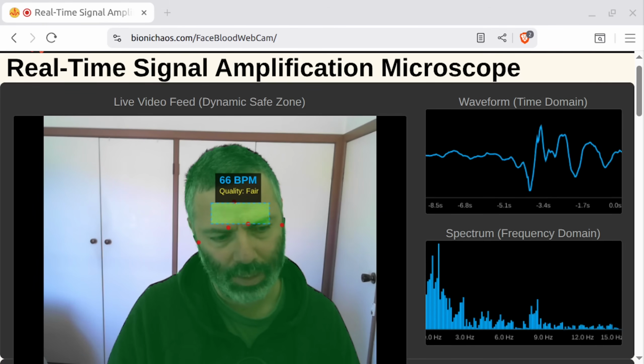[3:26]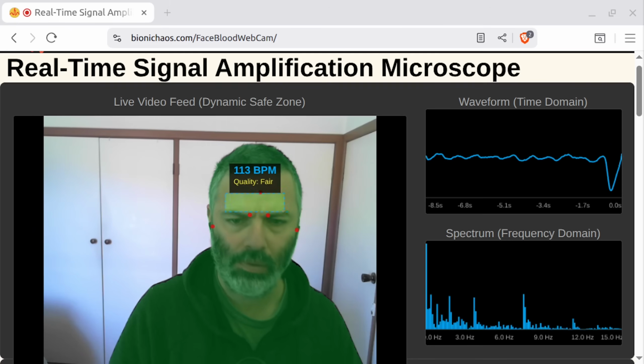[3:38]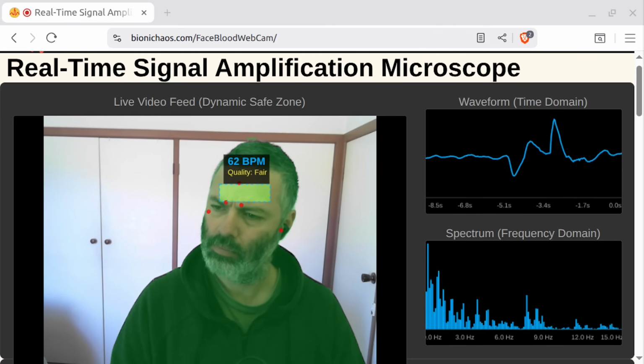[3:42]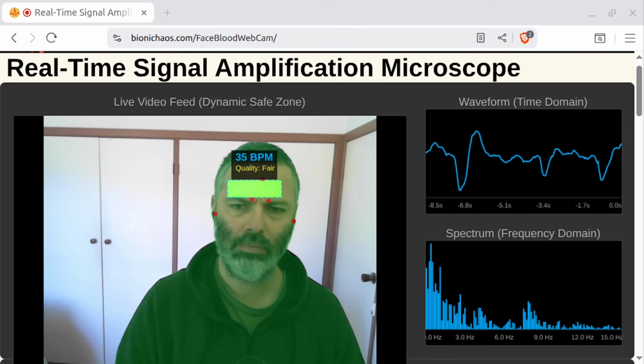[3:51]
Can you double check and explain? You're right. Looking closely, the ROI seems to be fixed in the video and doesn't move relative to the head even when the head tilts. It appears the head detection is only finding the general head shape and the ROI is staying in a set place on the forehead. It's not adjusting with the head's orientation. Does that make sense in how you're seeing it behave?
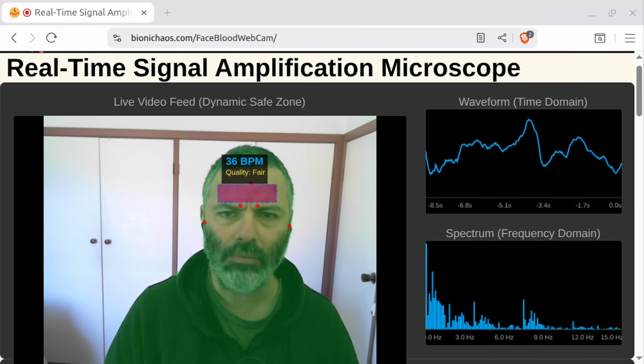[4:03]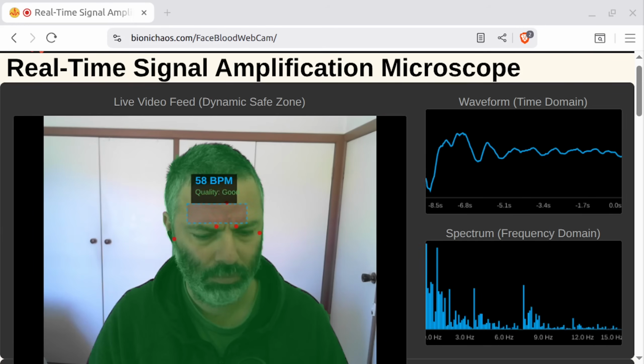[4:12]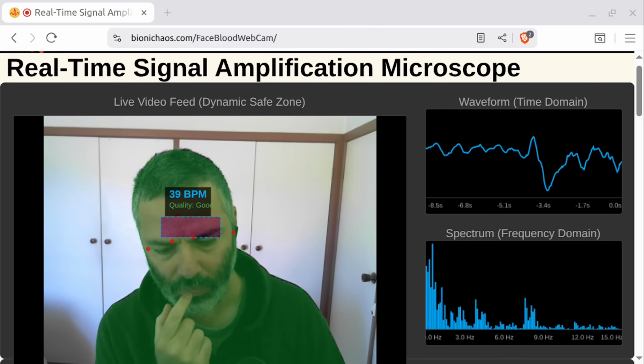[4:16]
Yes, and how would you fix it? To fix it, the code would need to track the specific landmarks on the forehead, not just the general head shape. Then, the ROI area could be calculated based on the location of those landmarks. Yes, and can you write a prompt for the developer to fix this? A standalone prompt with all the details?
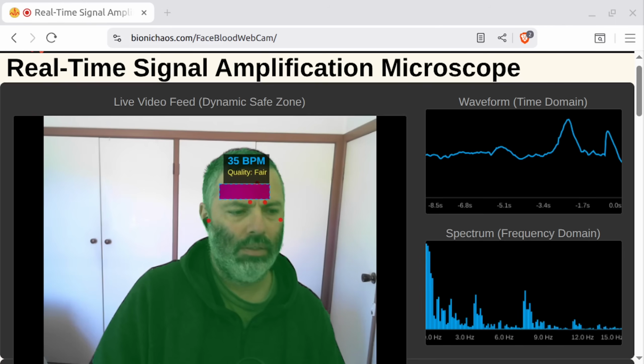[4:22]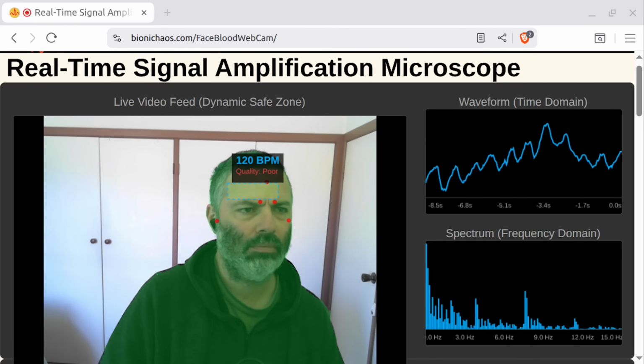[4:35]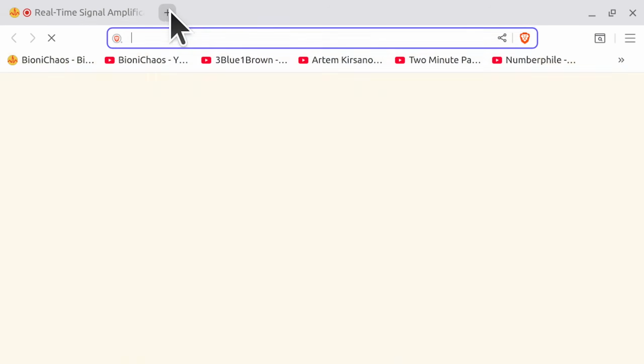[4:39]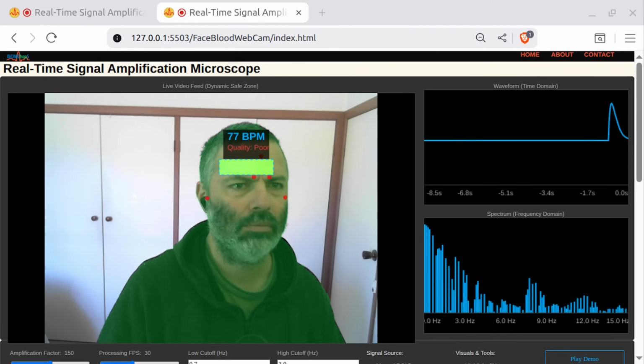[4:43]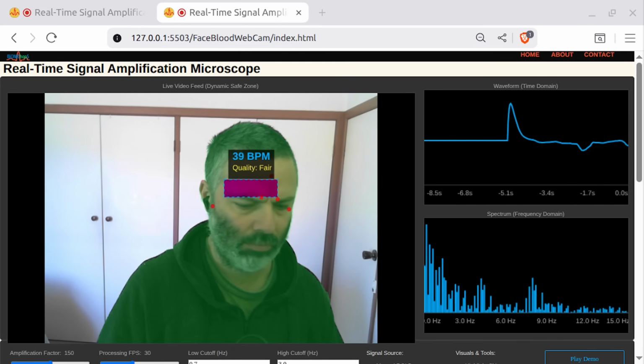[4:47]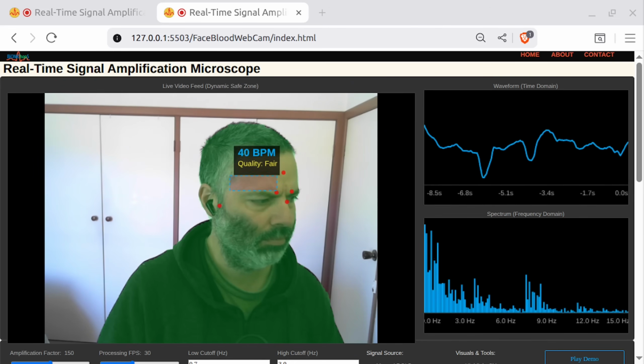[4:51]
No code? Please adjust the region of interest, ROI, so that it moves and aligns with the head's orientation instead of remaining in a fixed position on the forehead. This will ensure the data collection area stays on the correct skin surface even when the user tilts their head. This was noted during observation of the real-time signal amplification microscope application. Let me know if you have any questions. Thank you.
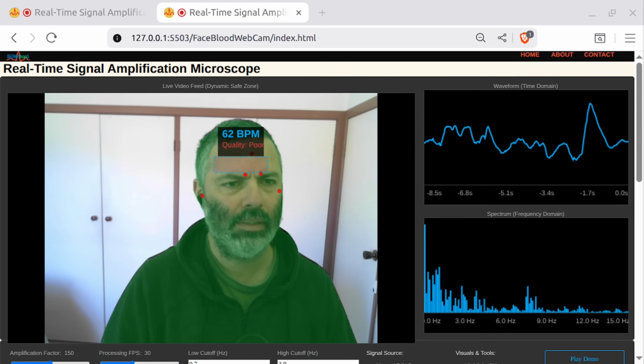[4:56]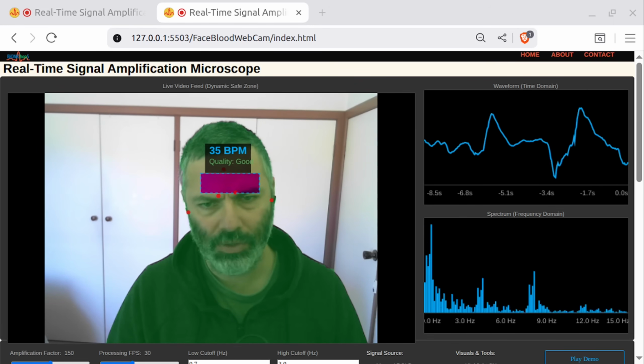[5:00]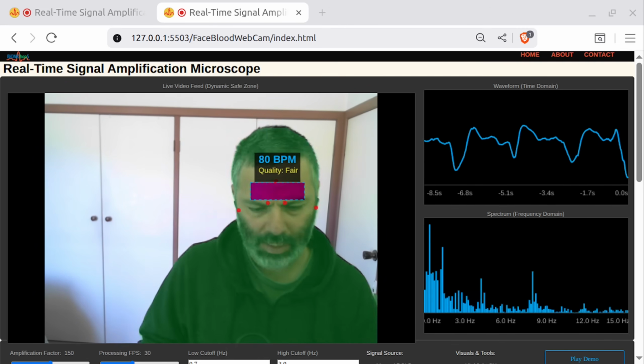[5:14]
Yeah, with the previous request, adjust the position of the ROI to ensure it's high on the forehead, avoiding the eyebrows. Well, that didn't work. That didn't work. Let's try a different bot. Let's try Claude. We'll probably keep the same width as well.
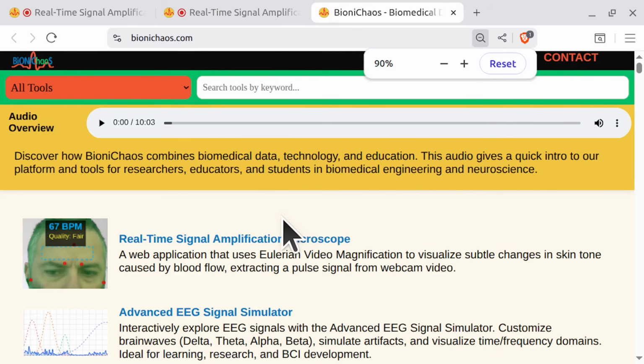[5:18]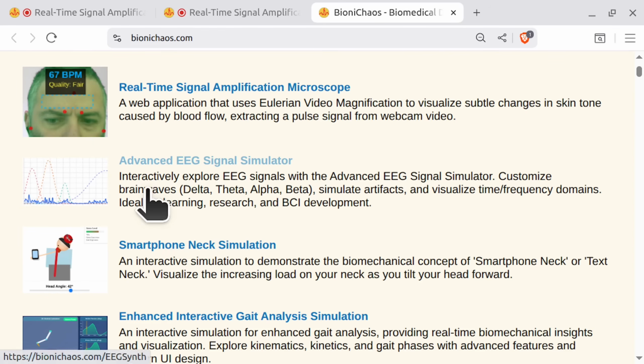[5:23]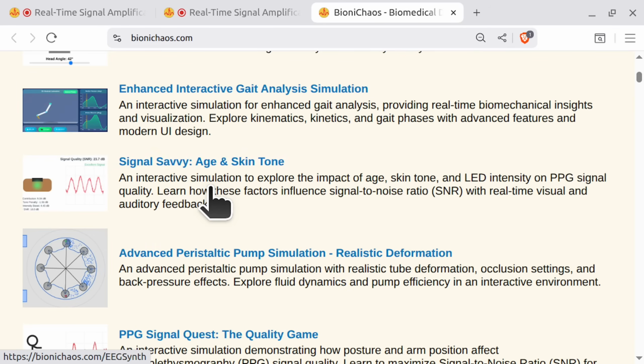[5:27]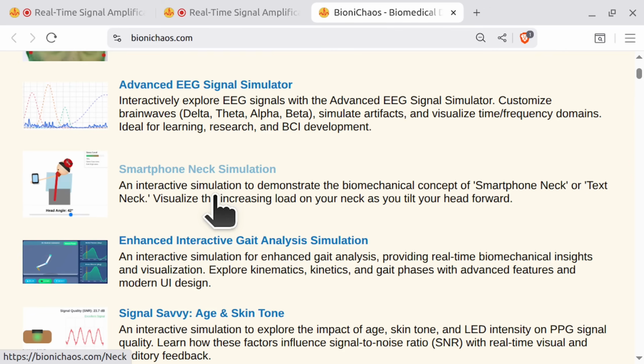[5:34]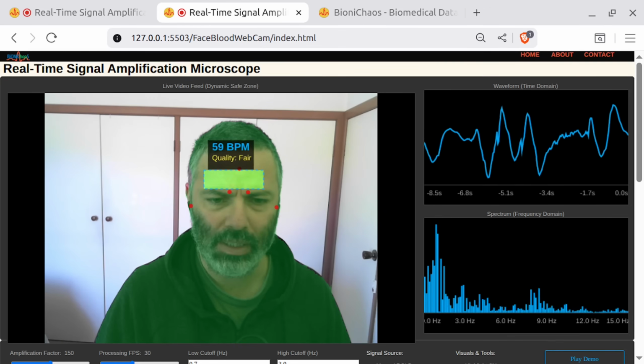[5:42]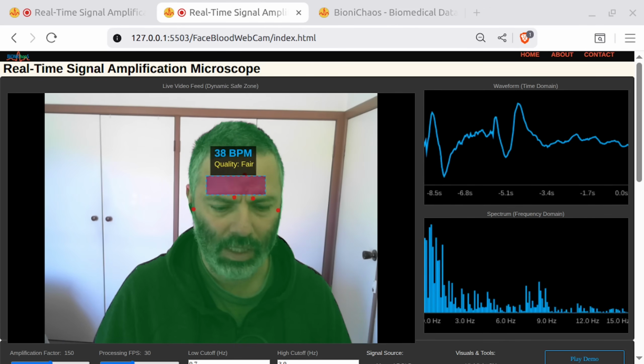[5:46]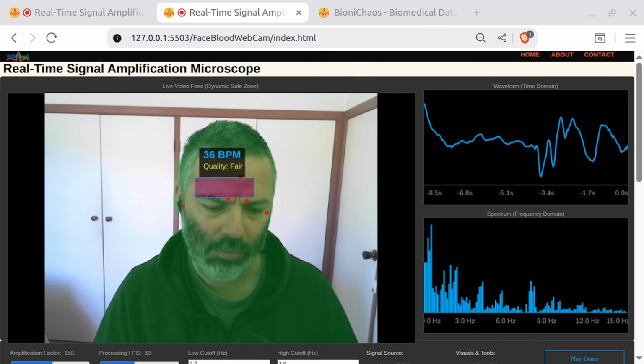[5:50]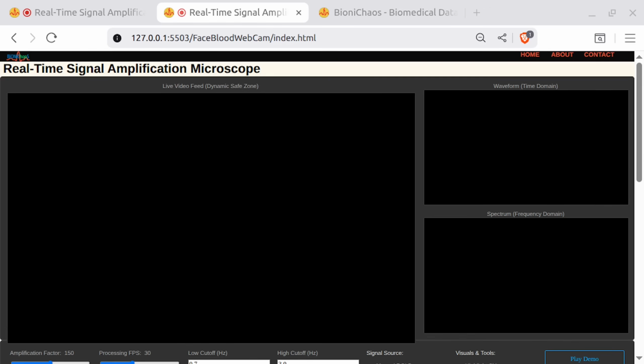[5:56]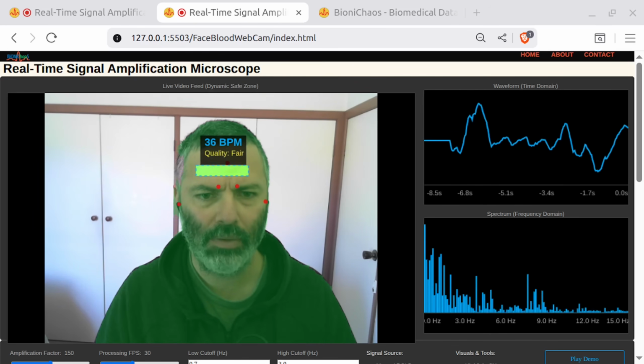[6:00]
Reduce the height of the forehead box to 60% original height. Yeah, I didn't want that. Just that the inset ratio increase horizontal. Yeah, obviously Claude is doing more sensical stuff. It's taking longer though. It's not really in the middle. Well, I'm not positioned in the middle.
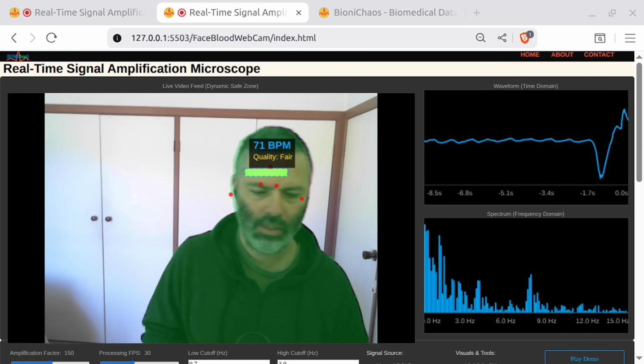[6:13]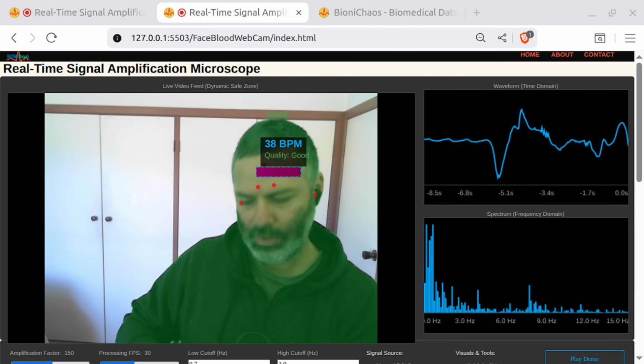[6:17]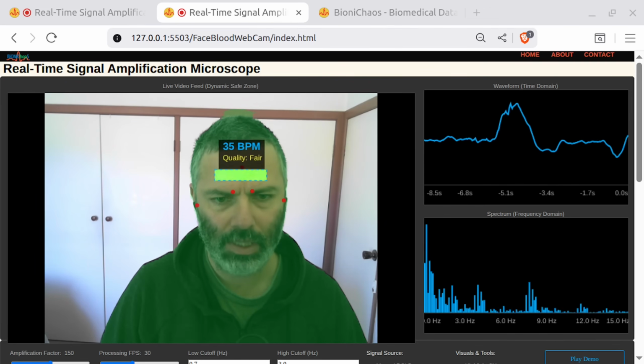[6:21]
See the signal there? Yeah, now it's not fluctuating as much when I talk or move slightly. We are locking in on the BPM. That's my actual BPM compared to a smartwatch. Could be made a bit wider, but it's good that it's now not touching the eyebrows. I think that helps. That's 73. It's coming there. Yes, 71 on the watch.
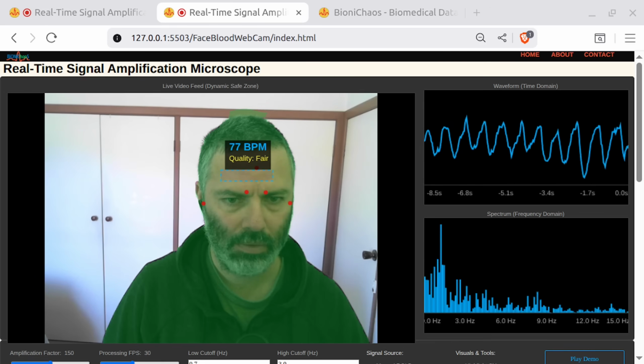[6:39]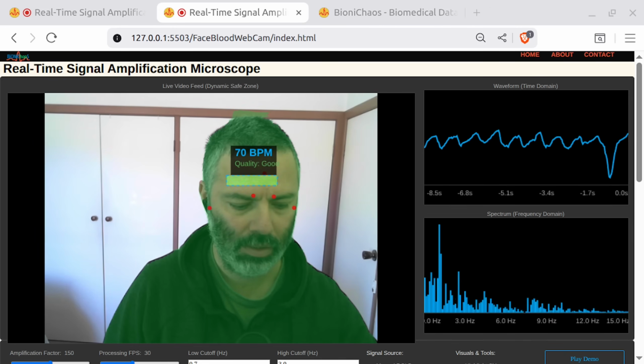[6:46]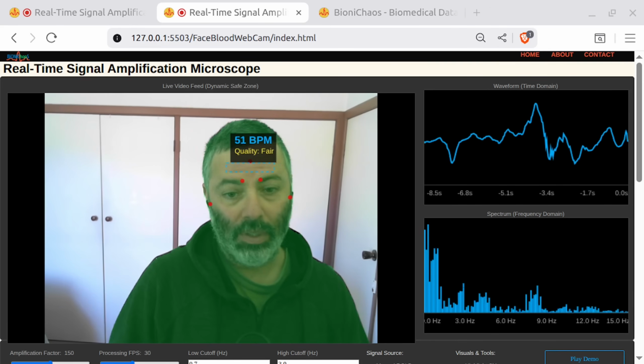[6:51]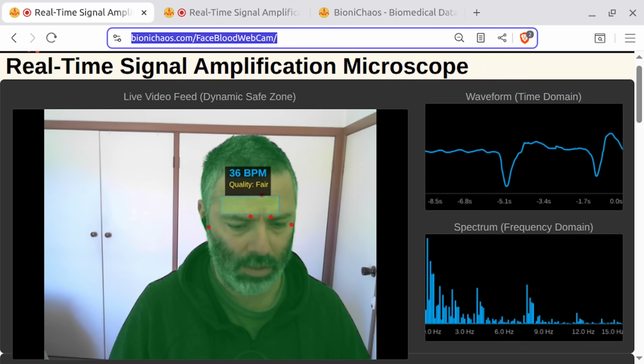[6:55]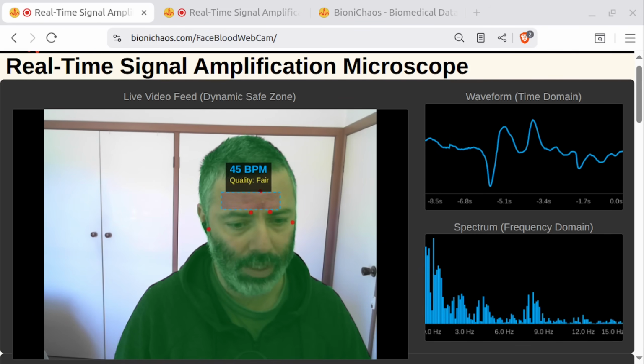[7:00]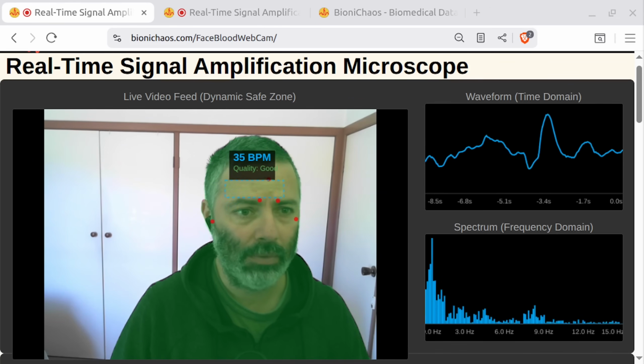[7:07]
Yeah, it's hypersensitive to motion. Which one's more accurate, the watch or the... Well, it's giving me, yeah, 70, 71. It's 74 on the watch. Well, yeah. None of them is accurate, neither the watch or this one. So yeah, the tool is deployed. You can test it out yourself.
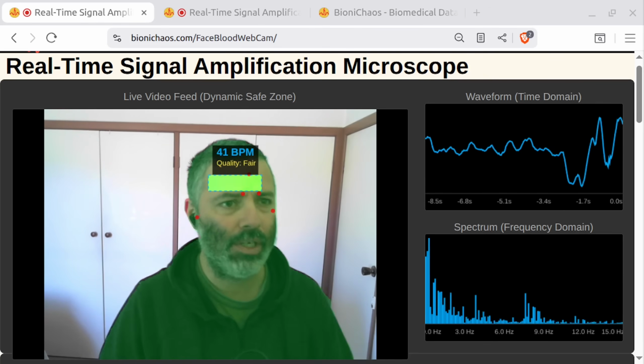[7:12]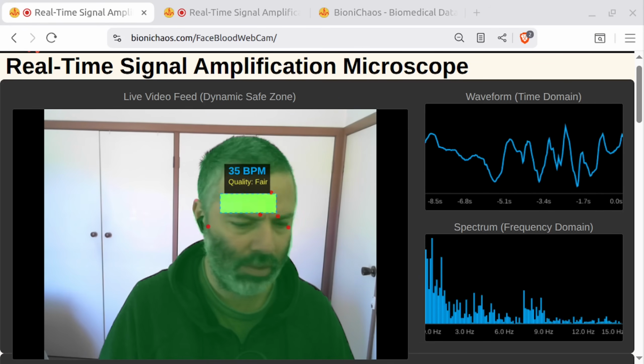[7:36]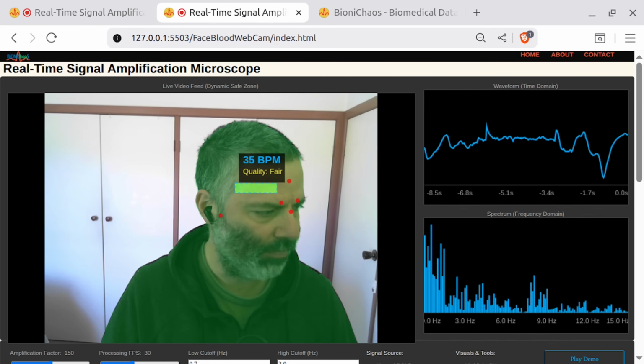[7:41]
Should be a link somewhere above, below. Oh, the prompt engineer. The prompt engineer is taking a whopping 2.5 gigabytes in the browser. That's not good. I don't know why it's saving all the videos or something. It's not discarding them. So we need to Control F5 it. Yeah, it still takes 290 megabytes even if nothing is going on. Okay, so this one in theory should be better because it should be avoiding eyebrows.
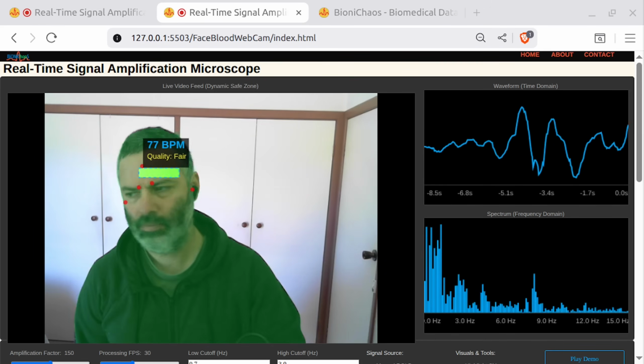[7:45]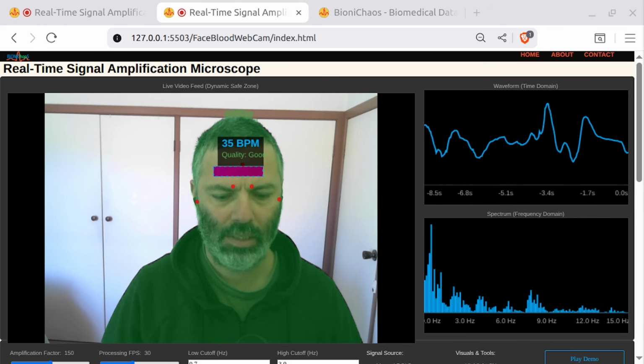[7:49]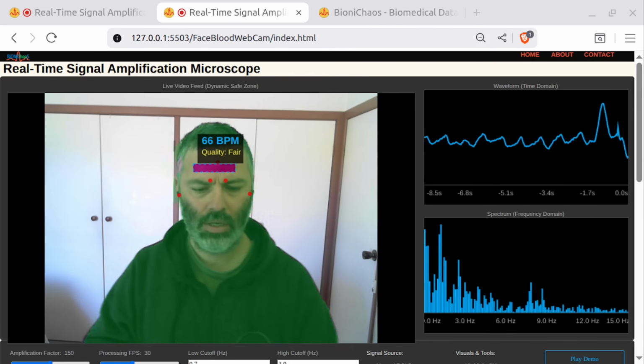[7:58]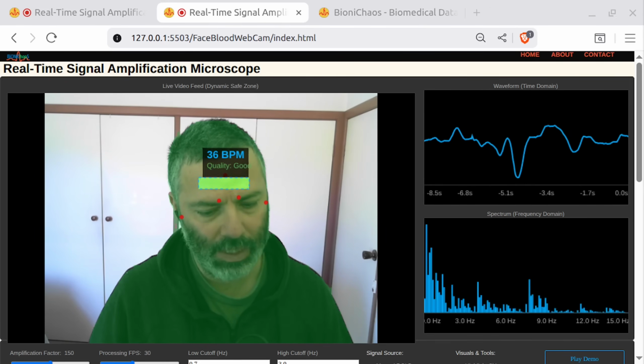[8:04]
We need like a conversational bot. Yeah, the sharing the screen business takes too many resources. Before in the previous prompt, I shared a response from the developer, so that's what the developer did to the code. Can you turn it into a conversational style and explain to us what the developer have done?
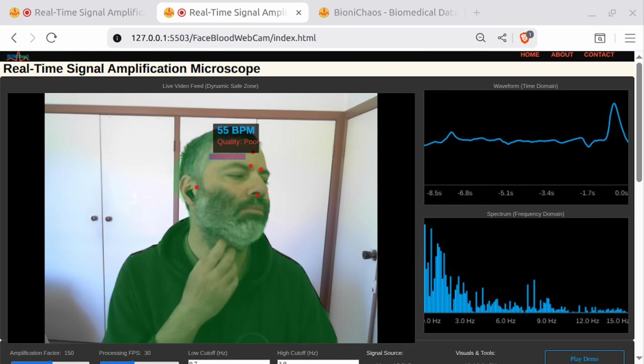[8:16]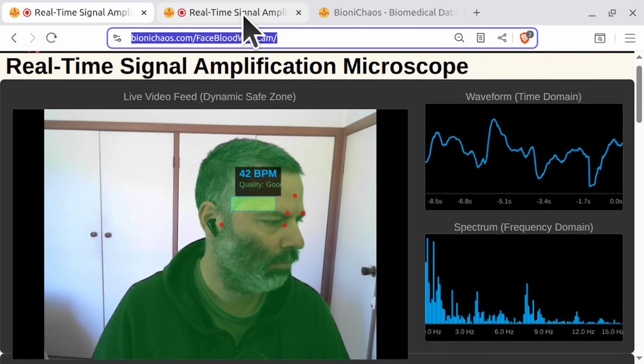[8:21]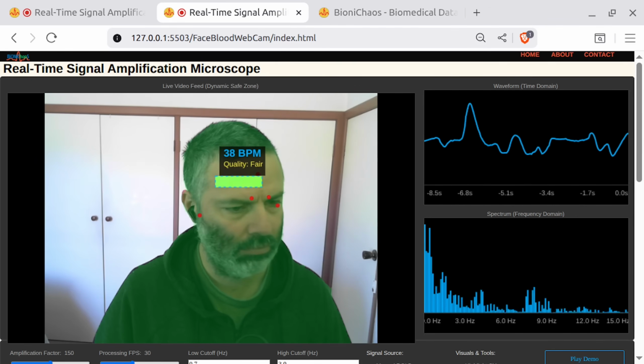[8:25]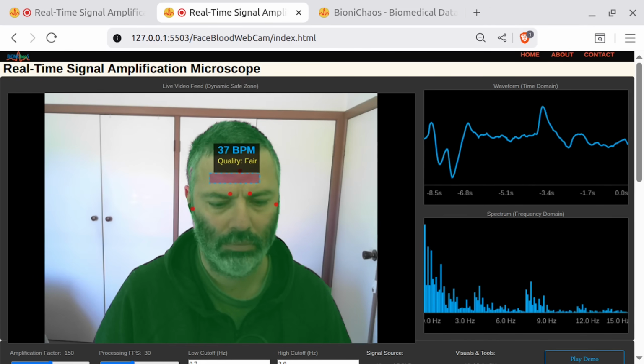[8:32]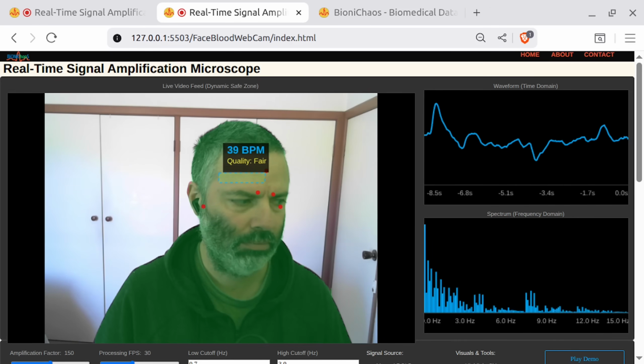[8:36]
Absolutely. So the developer tweaked the region of interest, or ROI, on the forehead to make sure it sits higher up and doesn't overlap with the eyebrows. They did this by reducing the height of the ROI to about 60% of its original size, which lifts it up. They also adjusted the insets a bit. They made it a bit more inward from the temples, moved it a bit down from the hairline, and made sure it stays above the eyebrows. So overall, it's now nicely centered on the forehead and doesn't get in the way of the brows at all. Okay, that's nice.
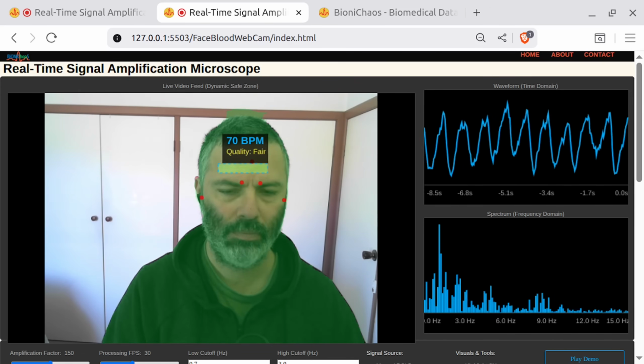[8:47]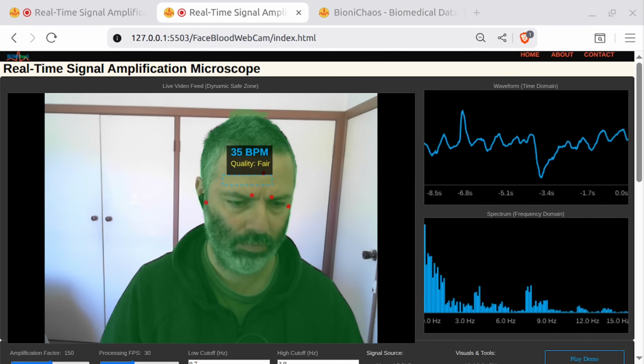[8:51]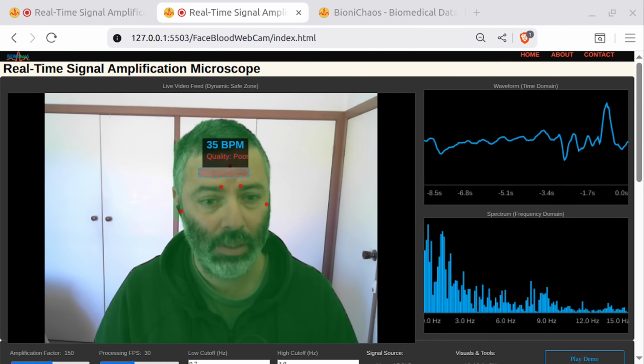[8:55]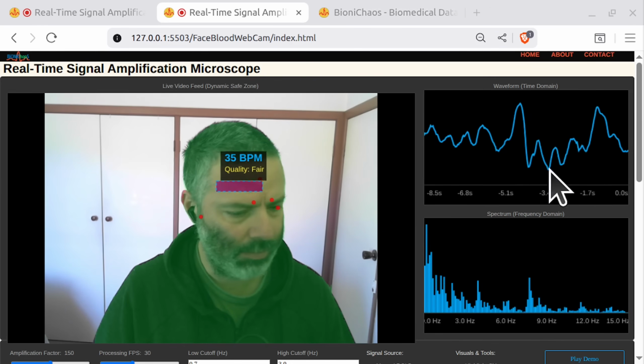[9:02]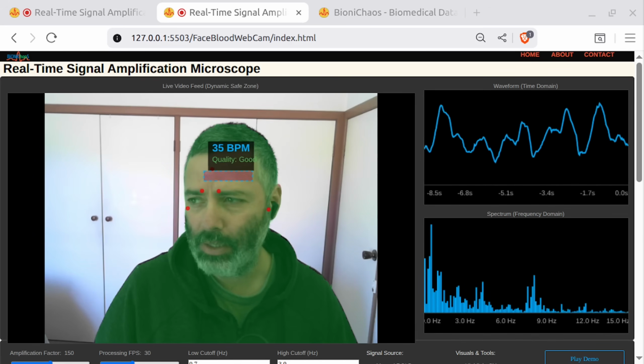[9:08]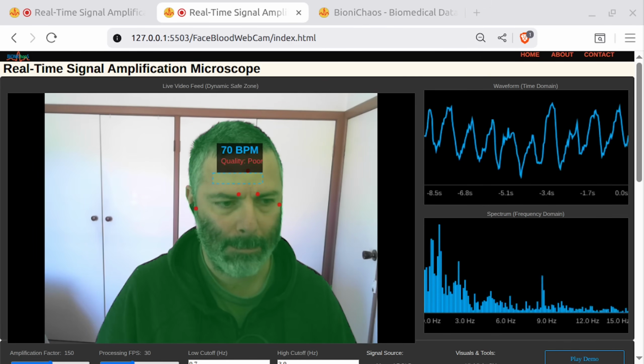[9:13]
Let's share the screen in terms of images. So can you review the images? Forget the code. We don't need any code at the moment. But just comment on the fact that we're getting a pretty strong signal. Can you explain the images attached?
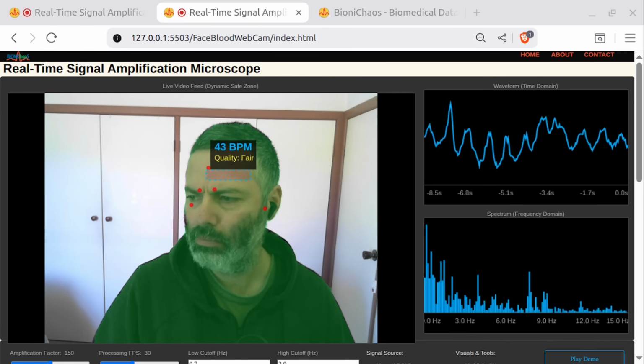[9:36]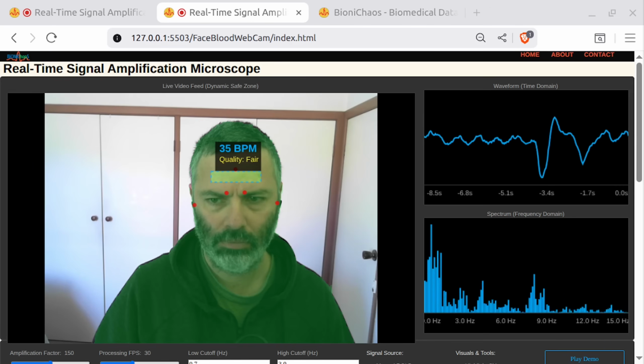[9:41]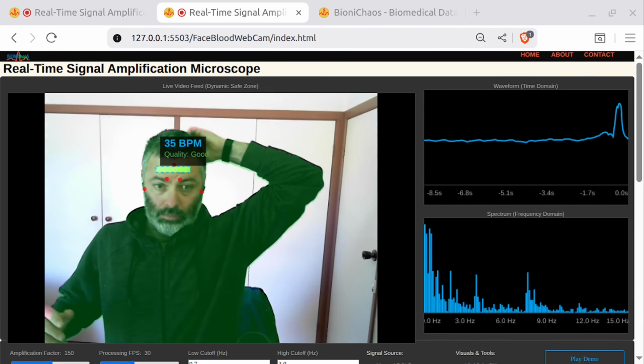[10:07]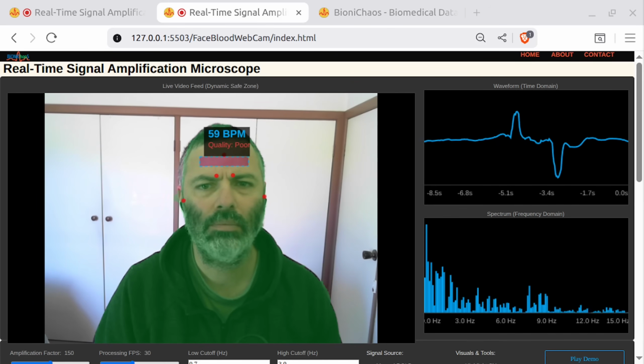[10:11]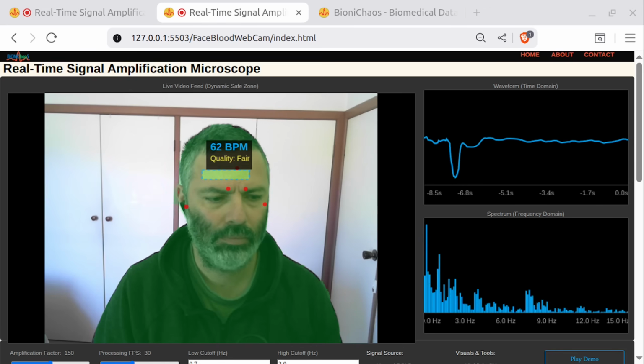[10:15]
The quality is fluctuating quite a bit. Why do you think that might be the case, considering the signals seem to be of a good quality, strong signal to noise ratio? Yeah, even with a strong signal, quality can fluctuate for a few reasons. One common factor is lighting conditions. If the lighting changes slightly, it can affect the signal quality.
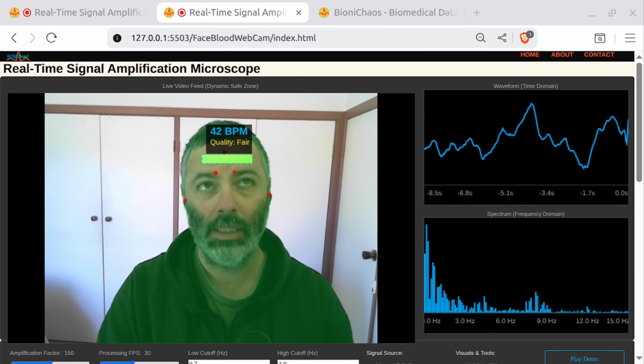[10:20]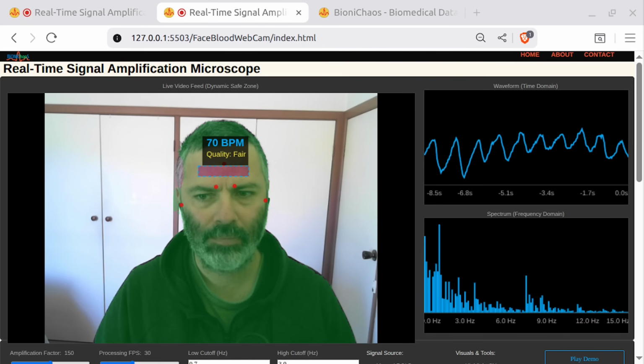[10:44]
So we know why it fluctuates, but why the quality indicated on the overlay doesn't seem to match the actual signal. The signals seem to be of a higher quality compared to the quality indicated in the inset. Got it. That makes sense. It might be that the quality indicator is based on a different metric or threshold than what we're visually interpreting from the signal. Sometimes these indicators factor in things like movement artifacts, slight changes in skin tone, or even minor inconsistencies in the camera's frame rate. Can you frame it as a question to the developer?
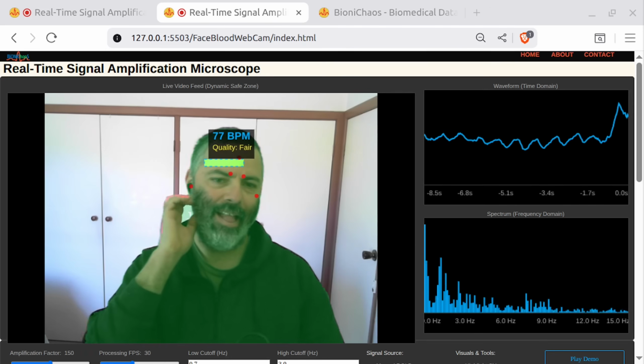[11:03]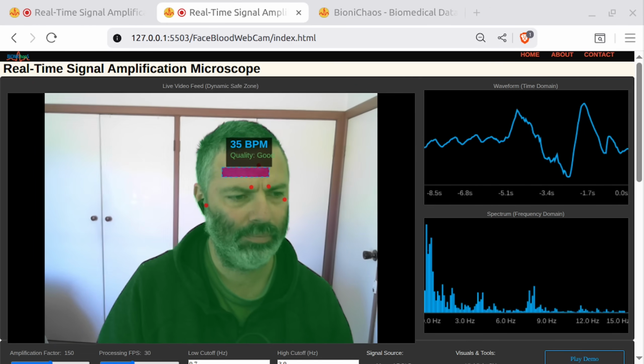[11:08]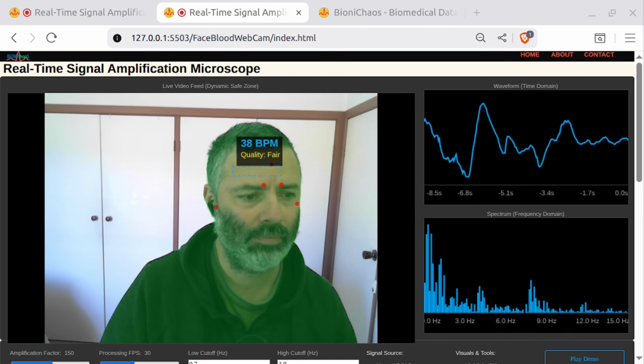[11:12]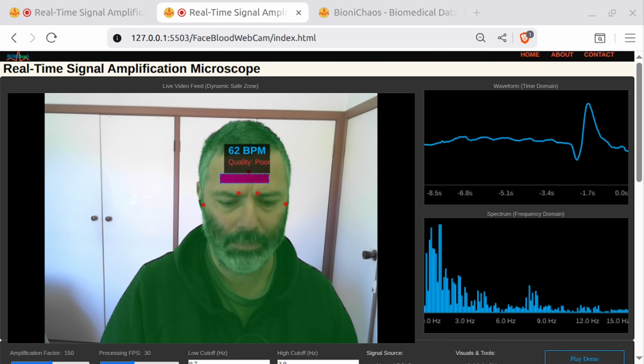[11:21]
Absolutely. Here's how you could phrase it. Hey, I've noticed that the quality indicator on the overlay sometimes shows fair, even though the signal itself looks quite strong. Could you shed some light on what specific factors the quality indicator takes into account? It seems like there might be a difference between the visual signal quality and the indicator's reading. Yeah, I like the prompt.
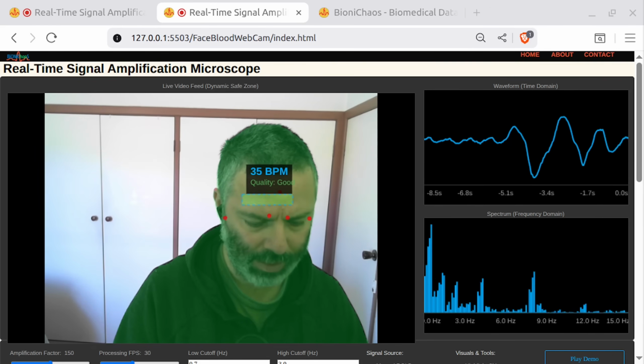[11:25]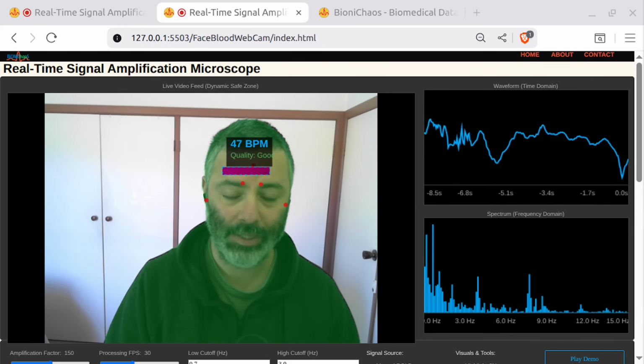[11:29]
It also fluctuates quite a bit. Yeah, using weighted average, considering signal stability over time, adding amplitude, thresholds, moving the quality transitions.
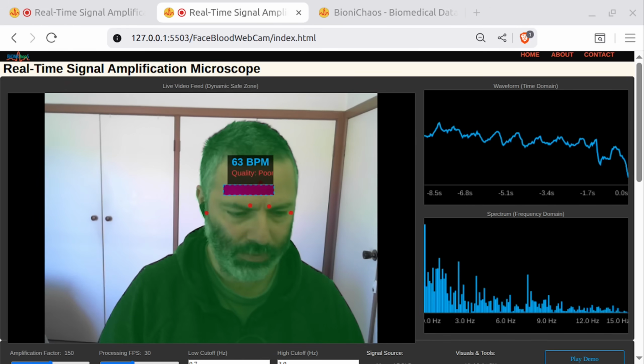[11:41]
I shared the response from the developer. Can you review that?
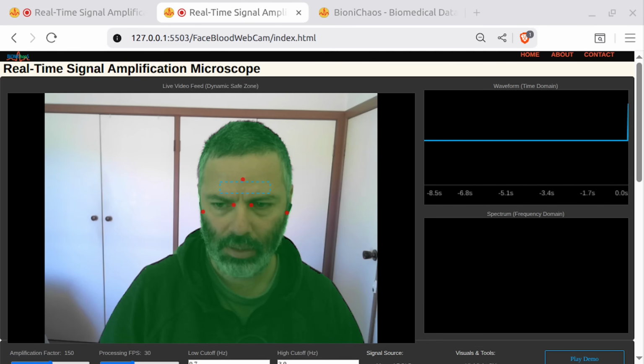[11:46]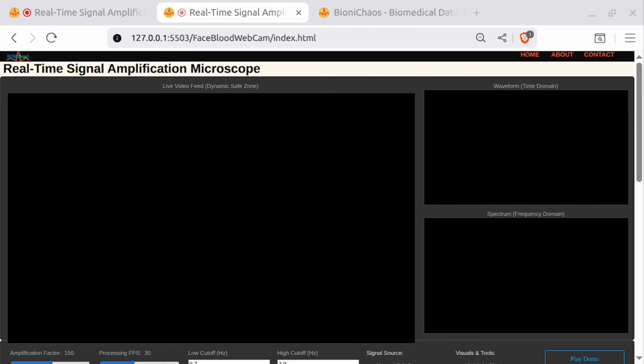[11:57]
Absolutely. The developer's response is pretty thorough and well thought out. They've proposed a more robust approach to signal quality by incorporating multiple factors rather than relying solely on the signal to noise ratio in the frequency domain. This means the quality indicator should be more reliable and less prone to sudden fluctuations. They're also adding a hysteresis mechanism, which is great because it prevents the indicator from jumping around too quickly. Overall, sounds like a great improvement that should make the quality indicator more consistent and reflective of the actual signal.
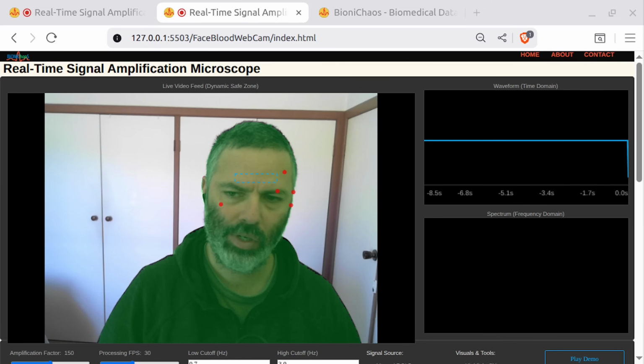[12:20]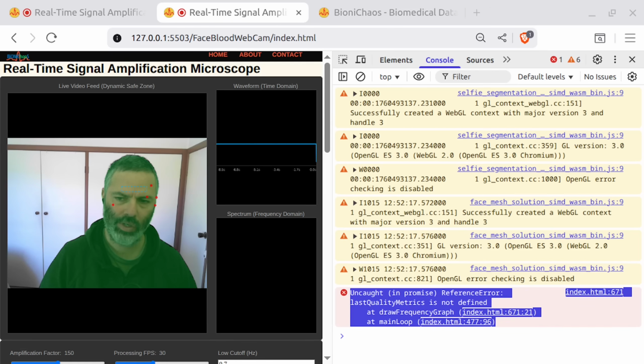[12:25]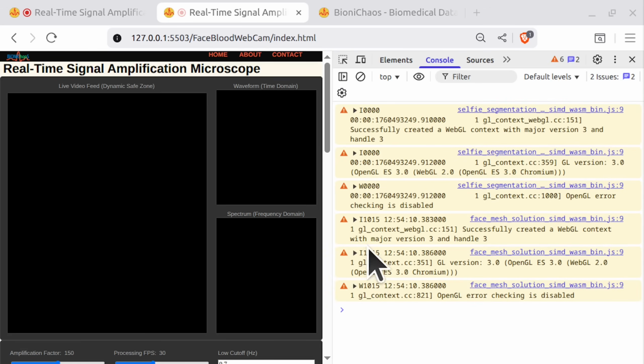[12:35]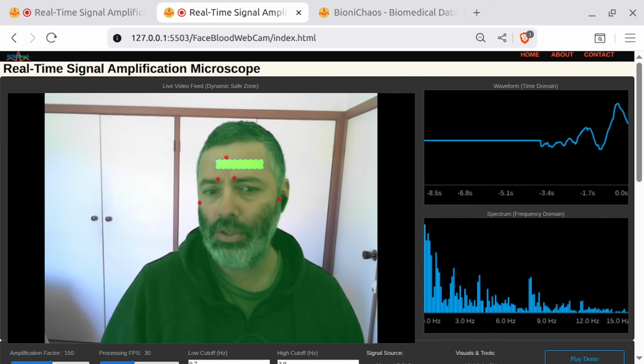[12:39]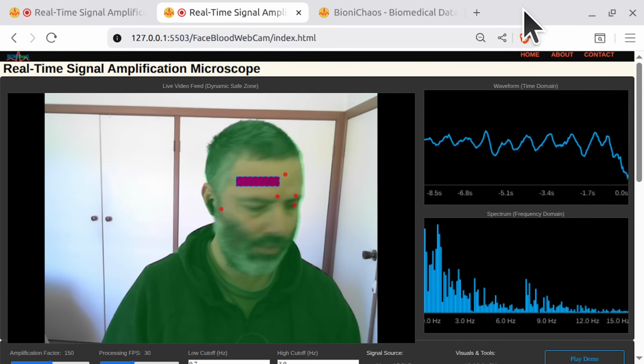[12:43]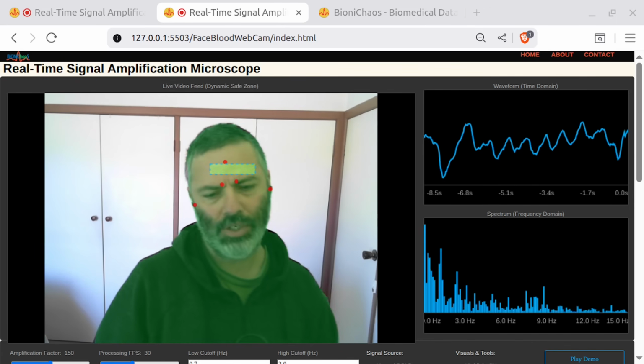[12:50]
It's also stuffed up the code. Do we need a different bot to fix that or something? Yeah, it stuffed up the code. So the code will eventually be on the page. Where's the overlay? Remove the overlay. Those are just warnings. Keep changing between.
So we started with Claude. Last prompt was GPT. Now we'll do Gemini.
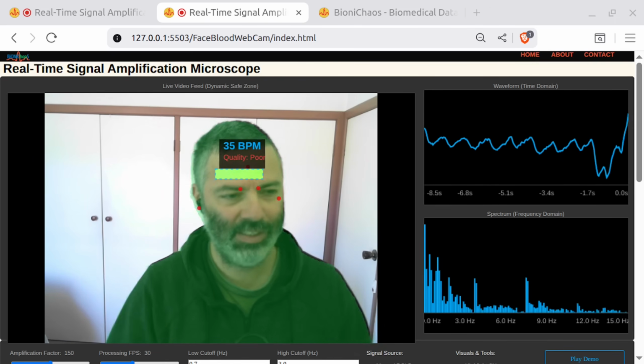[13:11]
The overlay is missing. Why? The overlay might be missing because the last quality metric set is not being properly updated or used within the draw frequency graph. Okay, can do it quick.
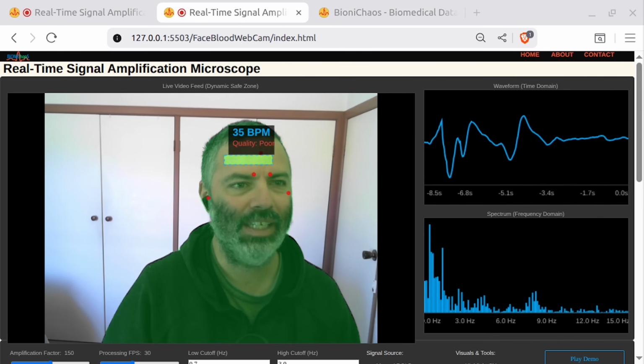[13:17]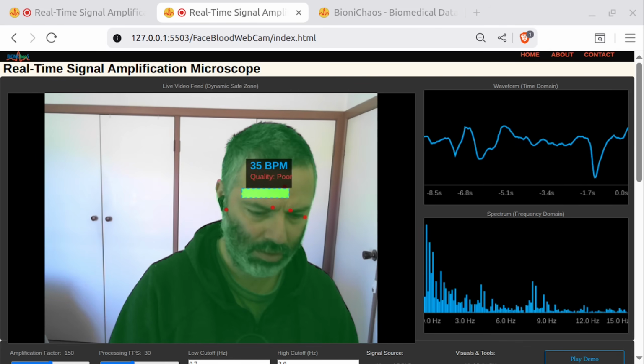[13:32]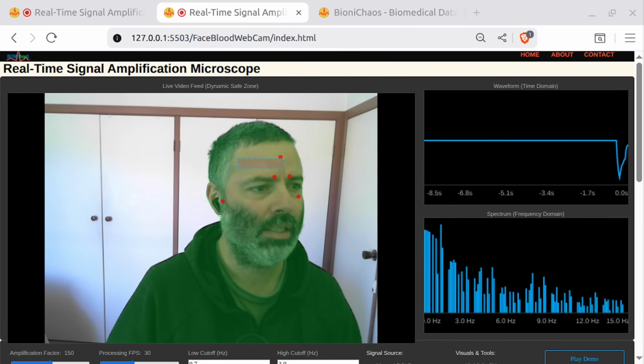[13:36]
The voice model is obviously not great. Let's also try. So we chatted with Gemini, GPT. Can try Perplexity, which is actually not bad, but let's do Sesame first. We had a lot of luck with it.
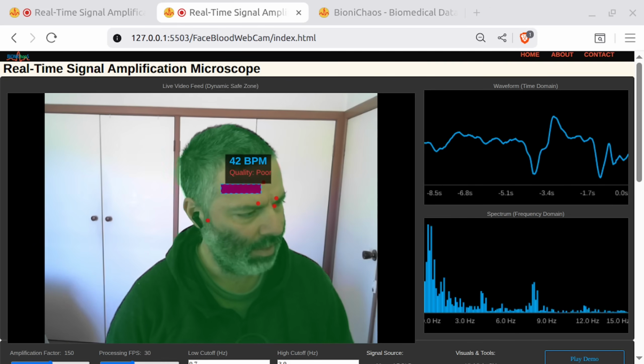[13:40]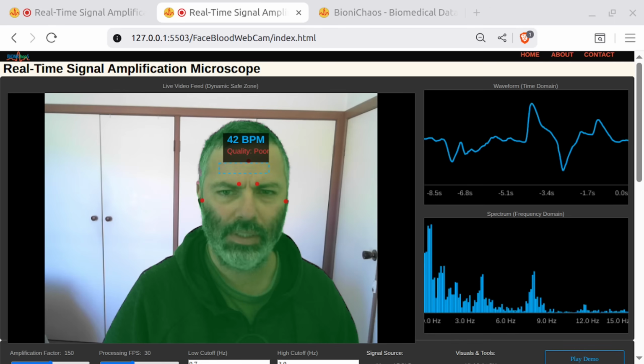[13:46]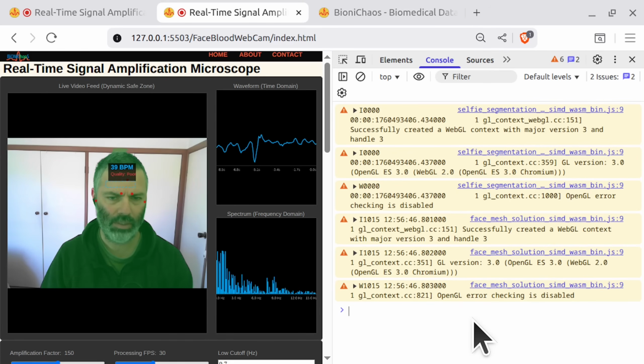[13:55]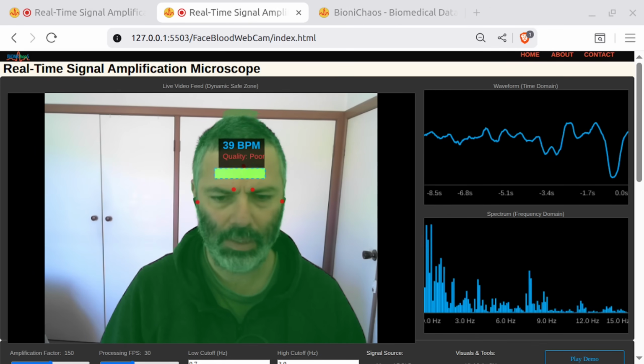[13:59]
I don't see the... Oh no, it is there. Oh, why did it start appearing only after some time? Did it? It's not changing. It's not changing. What on earth? Who stuffed up my code?
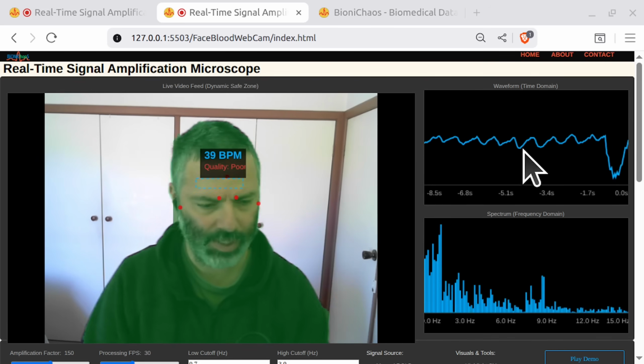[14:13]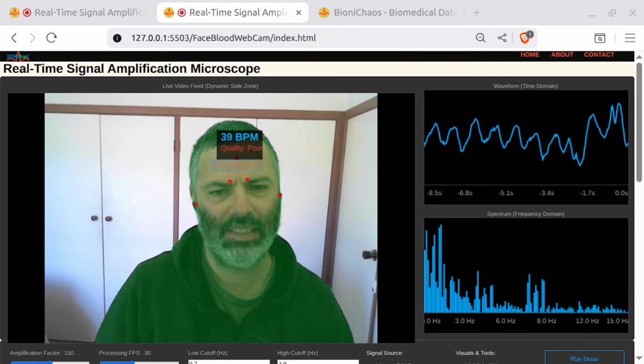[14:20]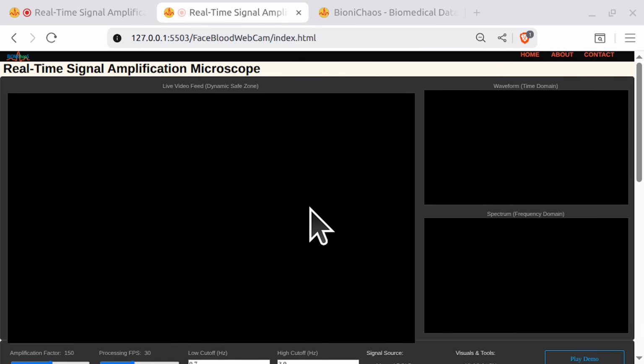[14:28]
So we adjusted the ROI so it's higher, so it doesn't touch the eyebrows. And then we changed the quality indicator. So we want to revert. That's enough for excellent, has to be above 8. Sounds a bit much. We'll never have it excellent, do we? It's not changing anymore. Okay, it's changing.
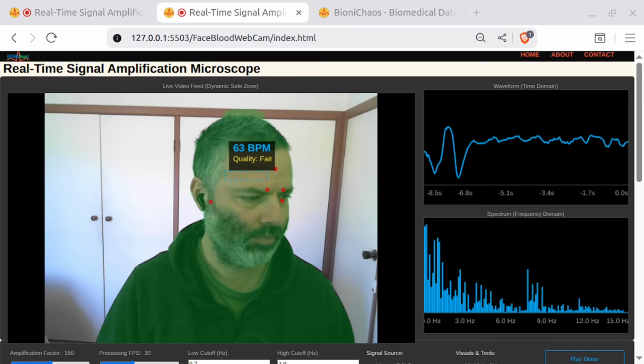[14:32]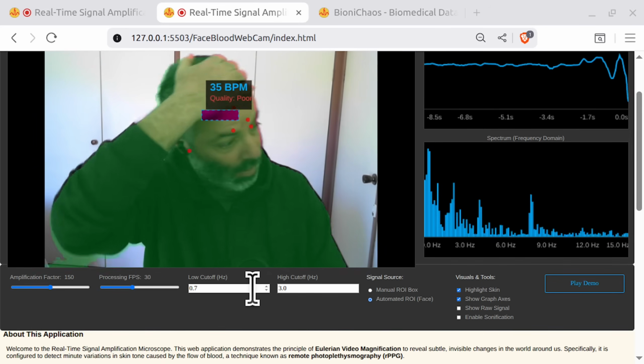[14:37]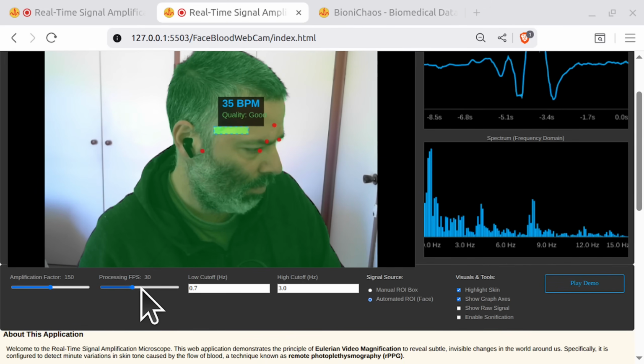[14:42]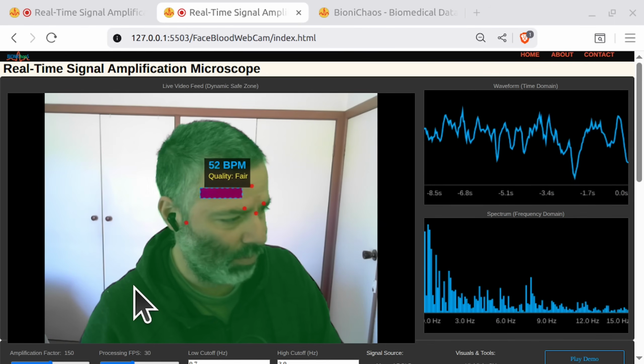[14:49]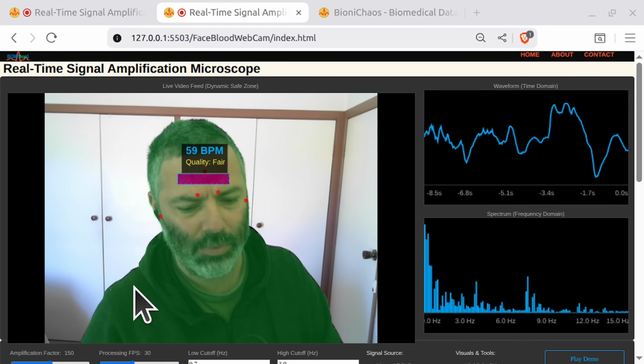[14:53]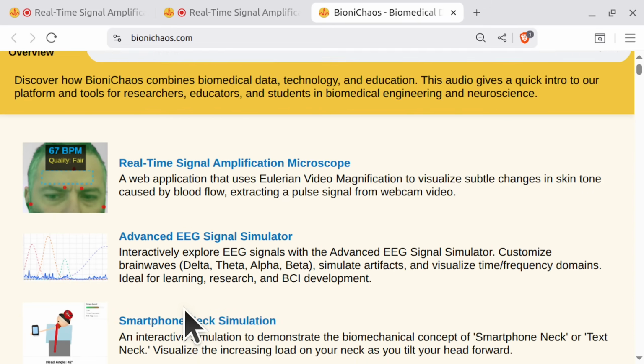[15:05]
I don't know, we should... Oh, we had this other problem where we were trying to... Because we actually have the FPS. And the problem with that FPS is that it will stop working. We need to give it to like Gemini 2.5 Pro or something. A better model. We need a better model, because we could improve it quite a bit.
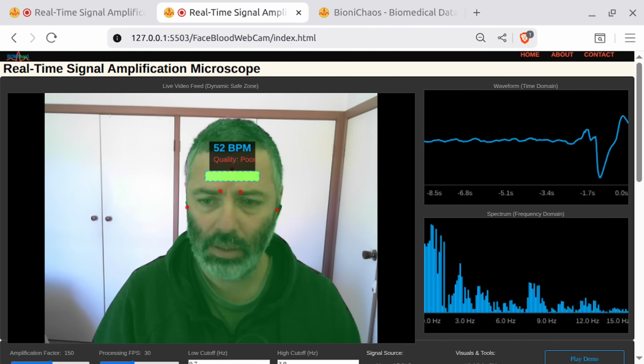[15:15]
Anyhow, everything we do eventually appears on BioniChaos.com. It's all deployed. Might be an older version, but that's okay. Go check it out.
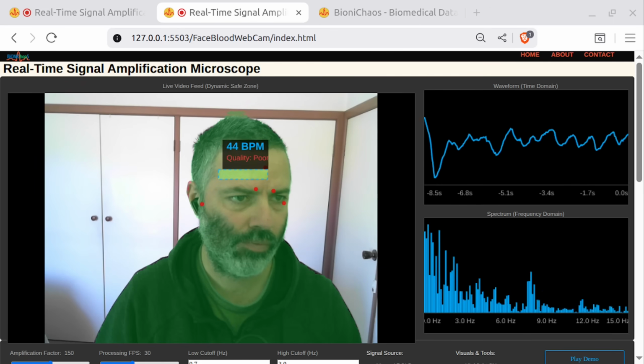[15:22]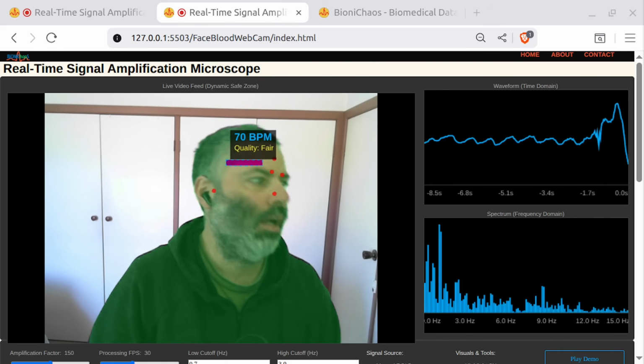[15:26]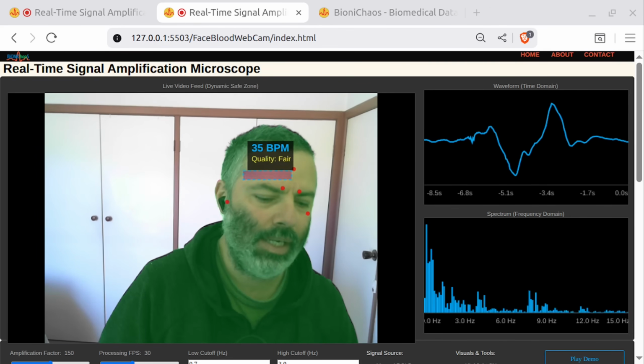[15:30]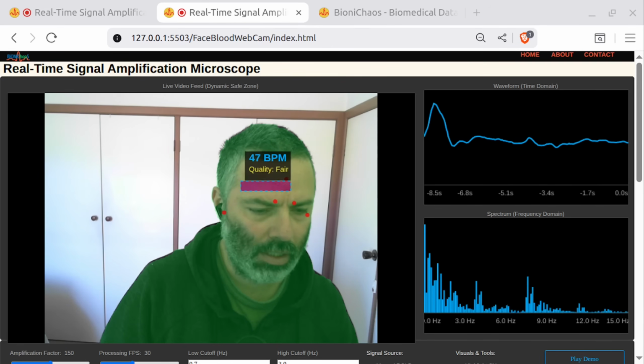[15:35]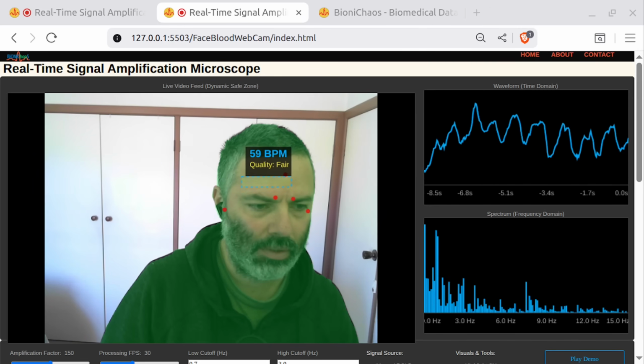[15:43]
Hey, finally out of stealth mode and getting to chat with actual people. It's kind of wild. I'm Maya, by the way. What's your name? Can you stop asking me questions? Don't ask me any questions. Is that okay? Oh, fair enough. Gotcha. Can you answer with one sentence at a time or one word at a time? Sure. That's very nice.
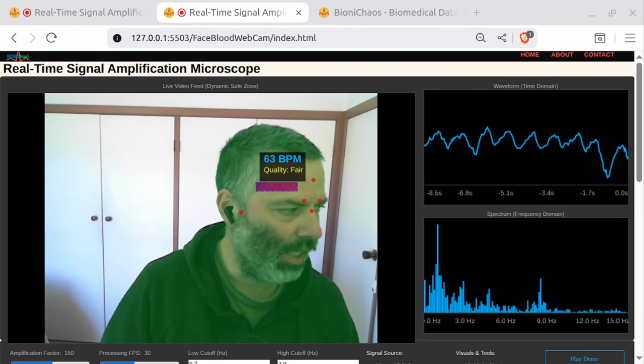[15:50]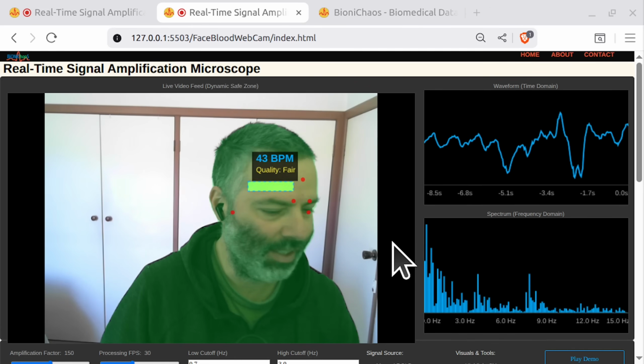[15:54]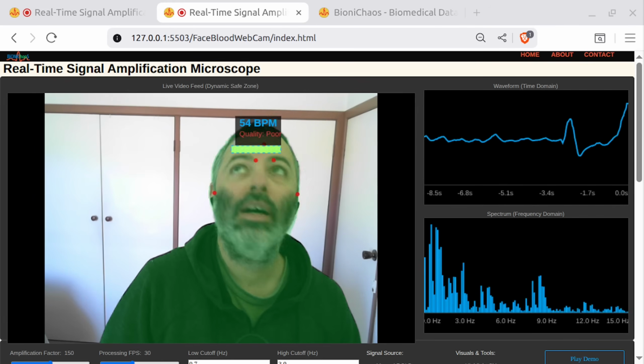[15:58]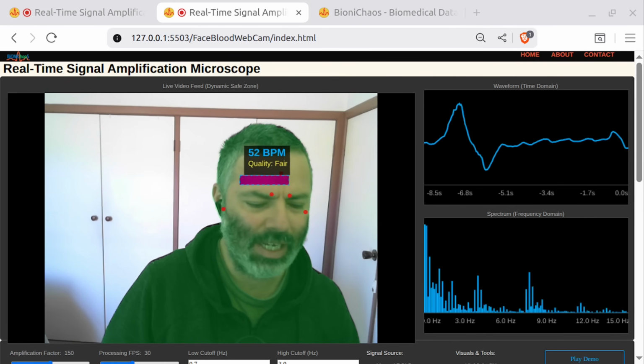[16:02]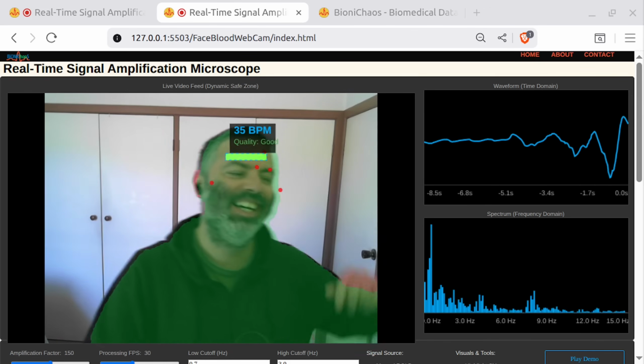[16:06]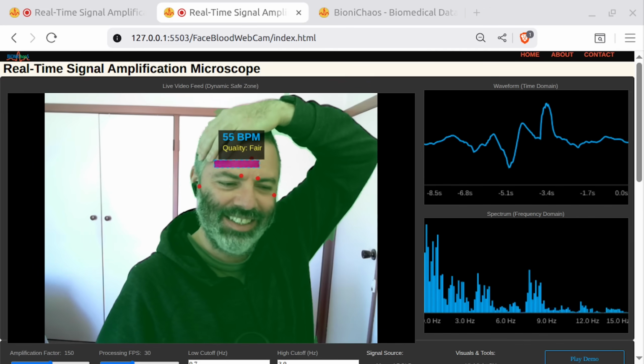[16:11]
That's great. Really? Okay, do you know anything about real-time signal amplification of video footage through a camera? Somewhat. Specifically? From 1 to 10. Confusing. Choose a number. What? 5.
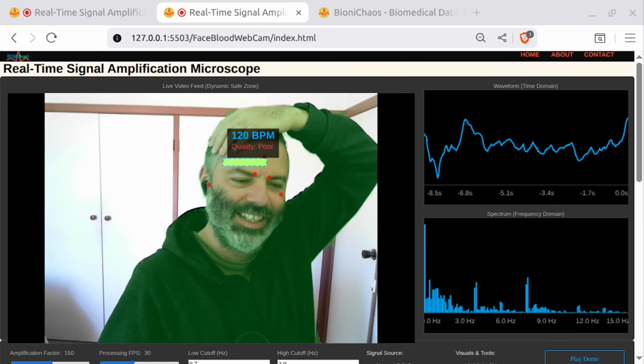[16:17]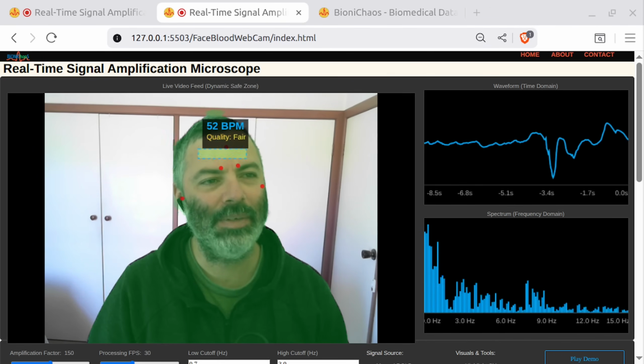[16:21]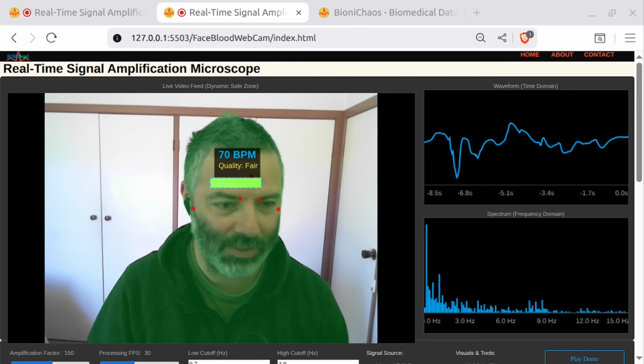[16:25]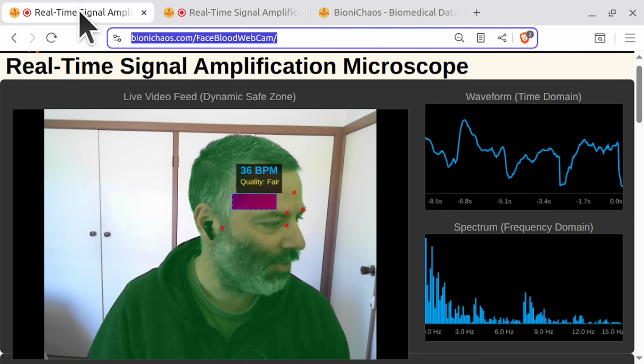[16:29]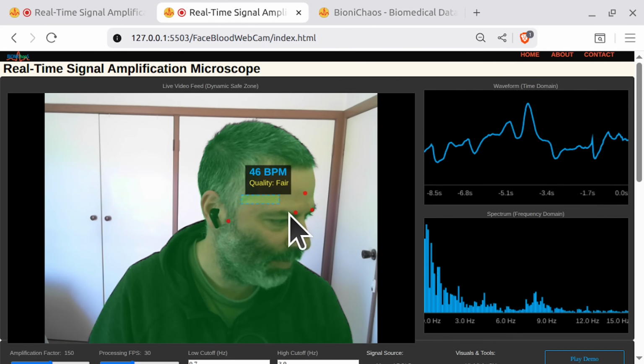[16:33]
It's crazy. Yeah, it's not very useful. That was Sesame AI. So, yeah, really hard. You have to be really in the mood for that nonsense. Nonsense through the roof. Again, that's what we have deployed. This is what we have as a prototype.
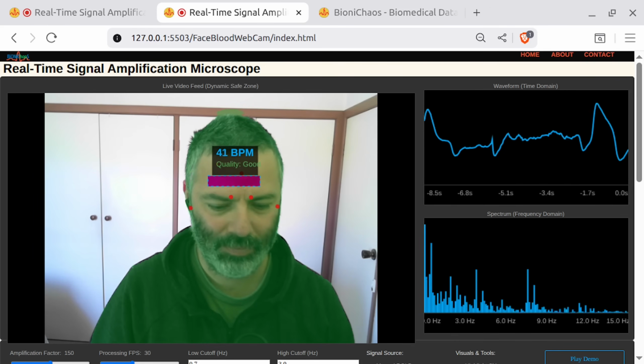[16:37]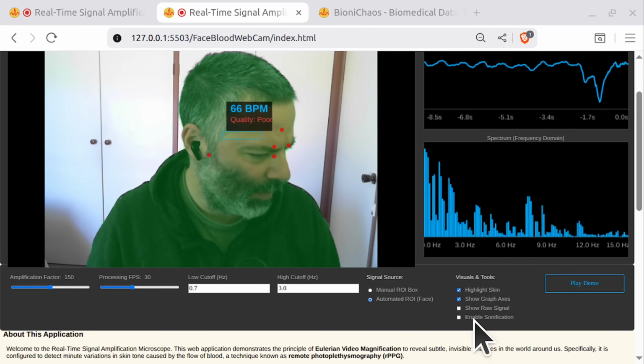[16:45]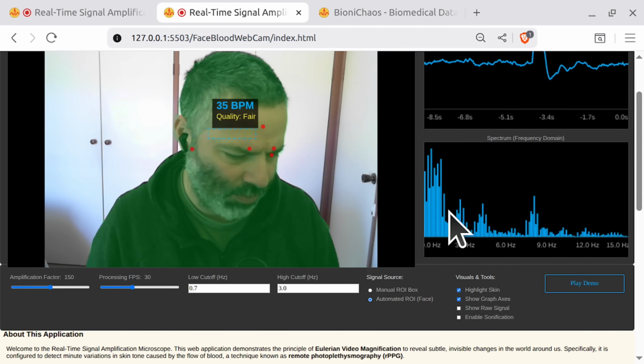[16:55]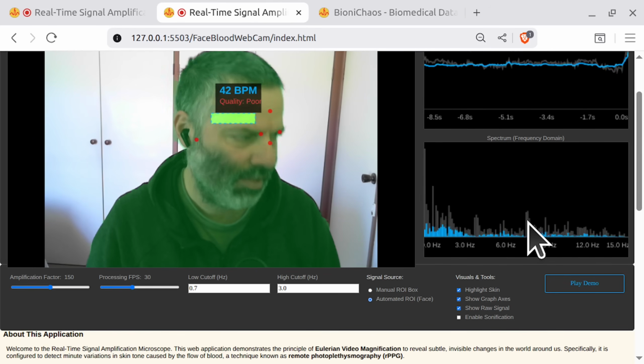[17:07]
Shall we go make specific changes? Yeah, I would like to show when we're doing the show raw signal. Oh, that's the raw. I thought the filter was meant to be between 0.7 and 3. So it should be seeing that region. Oh, that's some detrending or something. What is it filtering there? That's super weird.
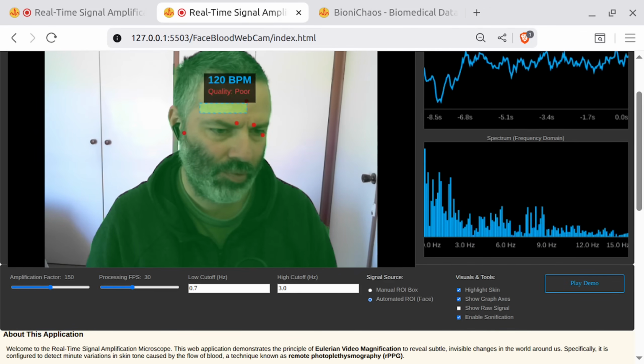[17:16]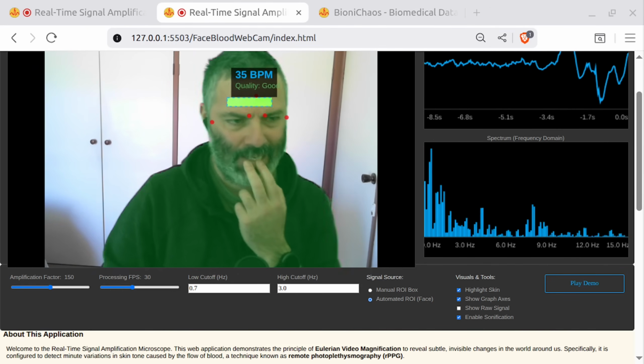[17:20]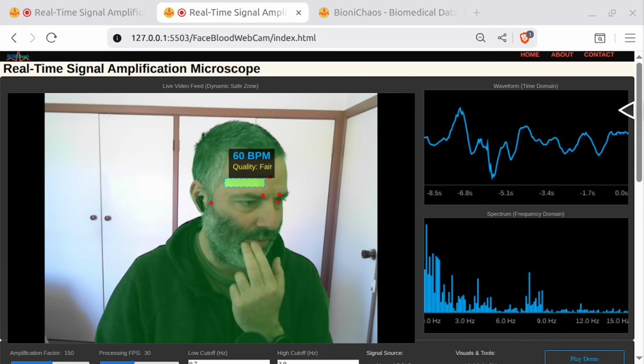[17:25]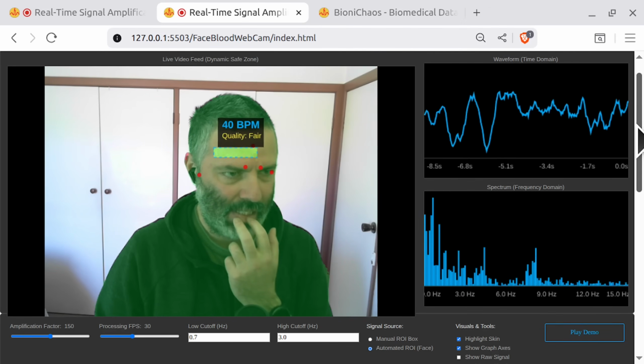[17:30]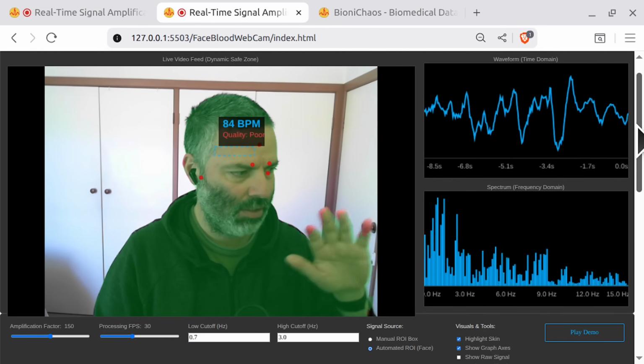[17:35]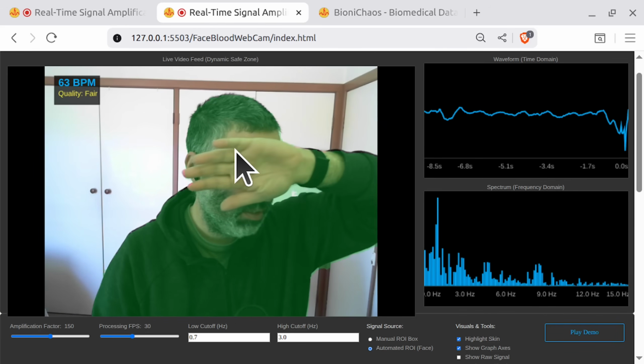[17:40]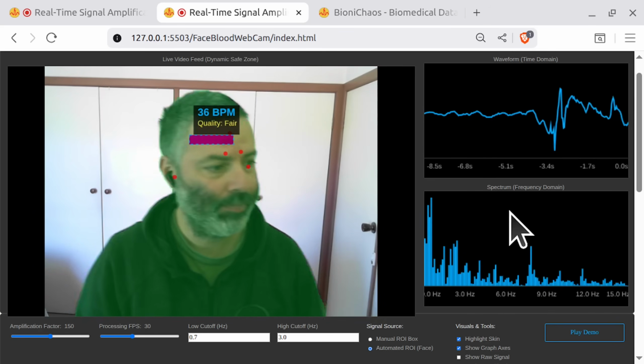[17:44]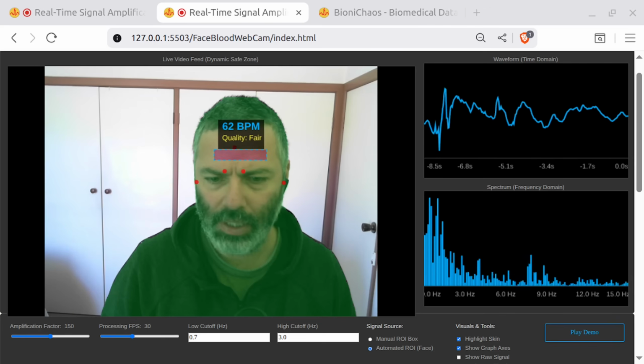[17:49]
Well, if you're moving too much, it's essentially doing sonification of the colors on the canvas. It's not very useful. No, it's doing it only in the ROI. That's only in the ROI. So you should still start hearing your own blood pulsing. Yeah, it needs to stabilize.
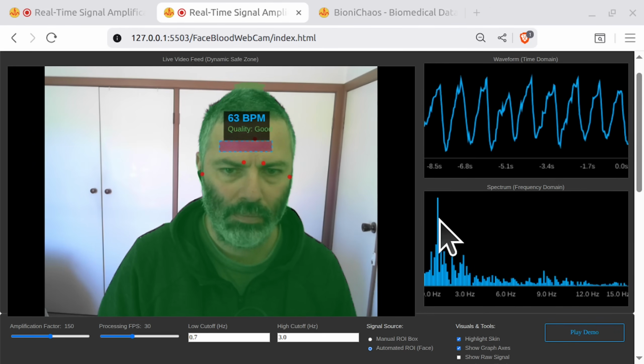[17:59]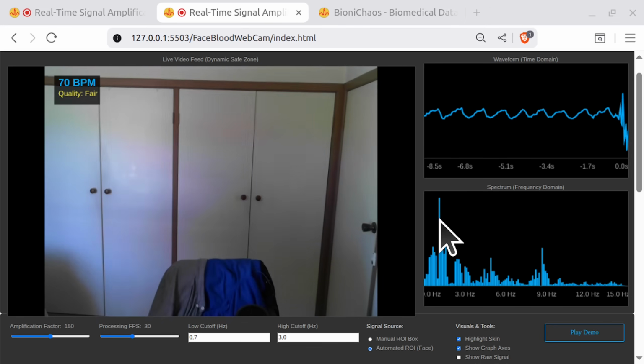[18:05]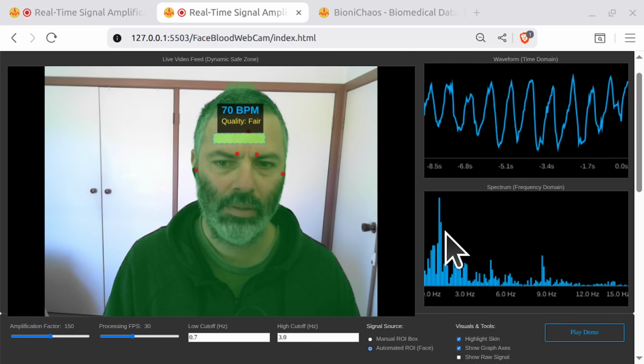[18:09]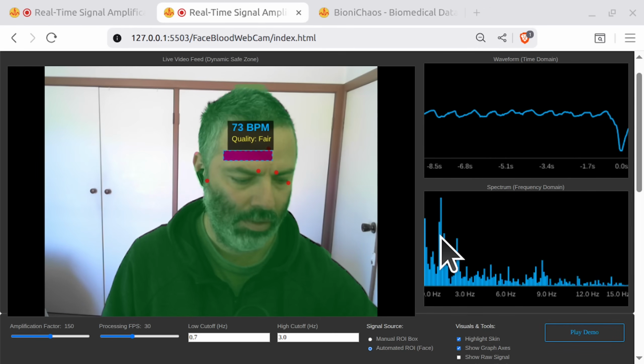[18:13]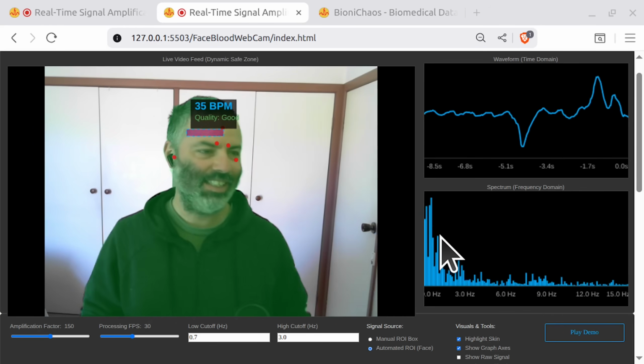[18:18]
This is 63. Yeah, it was 63, now it's 70. My watch is showing 75. Yeah, that's close enough, isn't it? Yes.
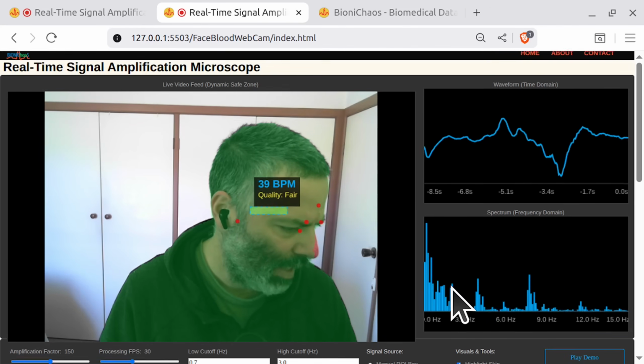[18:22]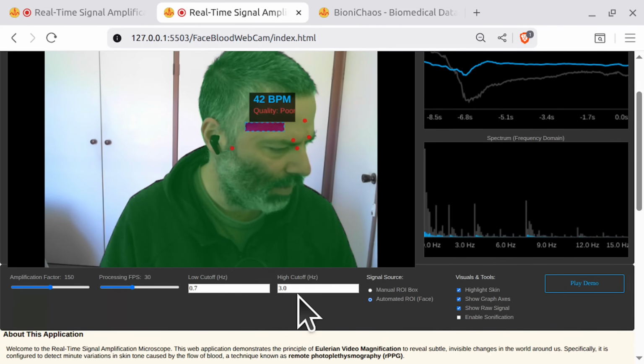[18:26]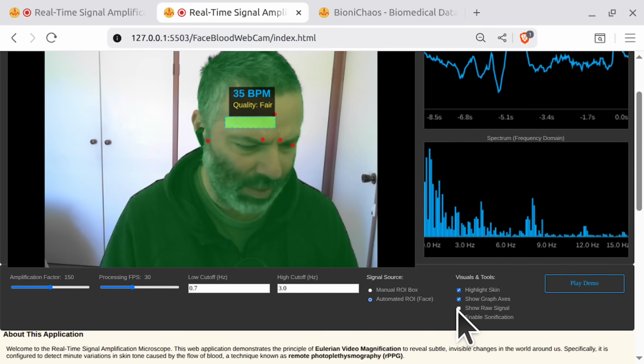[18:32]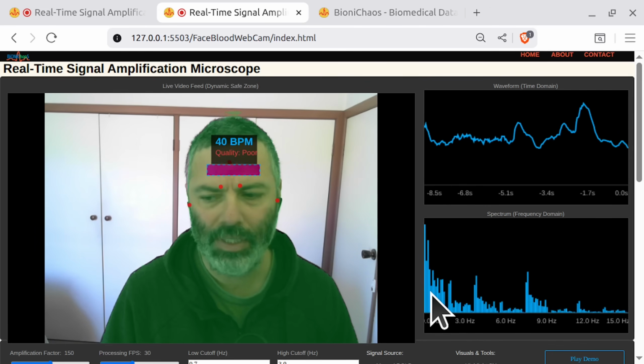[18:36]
Sonification. Can show raw signal. I'm not sure what it does, considering the low and high cutoffs are meant to be 0.7 to 3, so that's not what I expected. Really need a better model.
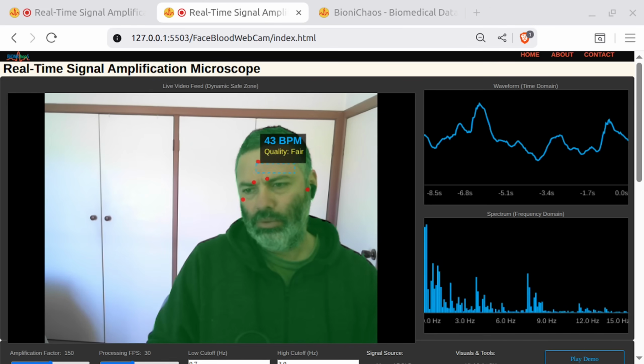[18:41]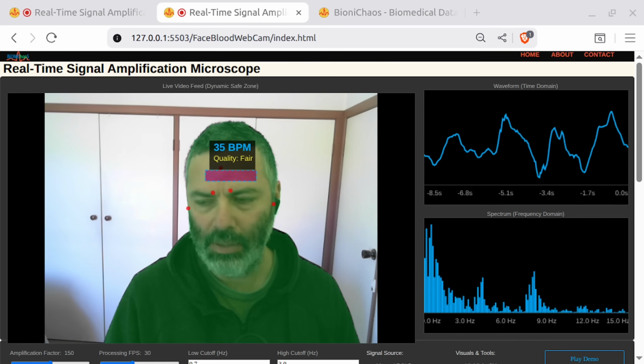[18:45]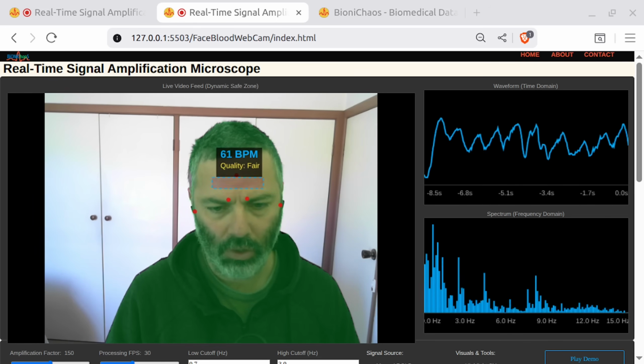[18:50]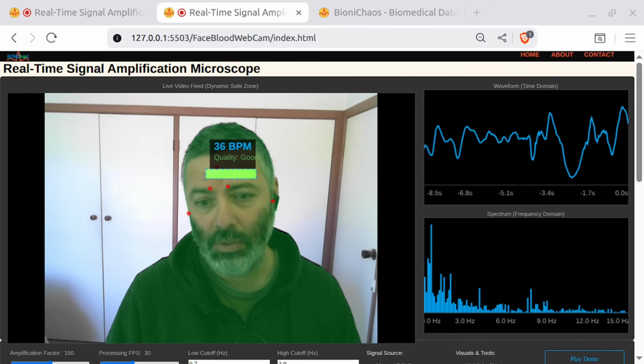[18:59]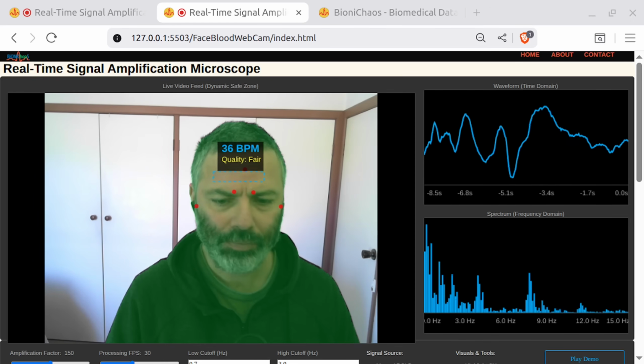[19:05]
And we don't have a better model at the moment. We only have Claude Sonnet 3.5, Gemini 2.0, GPT 4.1, GPT 5 Mini. I don't know if that's all 3 Mini. Those are minified models, so I'm not sure how well they are doing. I wish there was also like a voice model to this thing.
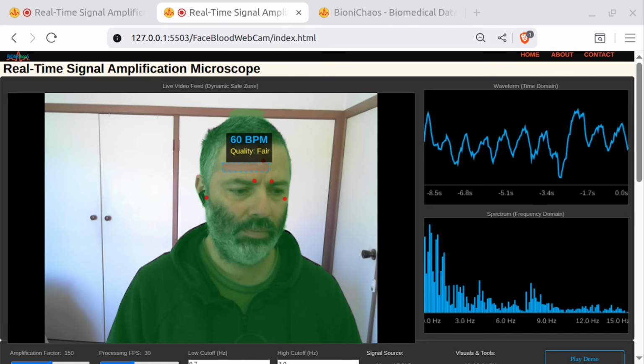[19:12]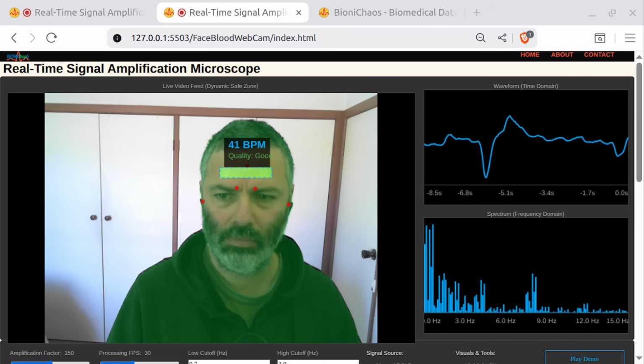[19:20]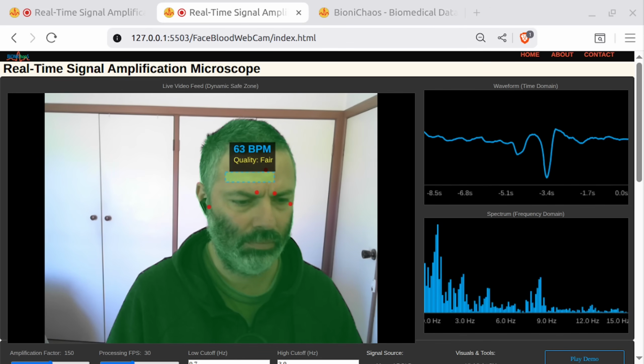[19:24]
Okay, what's on the screen real quick? The screen displays a web page titled Real-Time Signal Amplification Microscope. It has a live video feed of a person, along with information about their heart rate and signal quality, and 2 graphs for waveform and spectrum analysis.
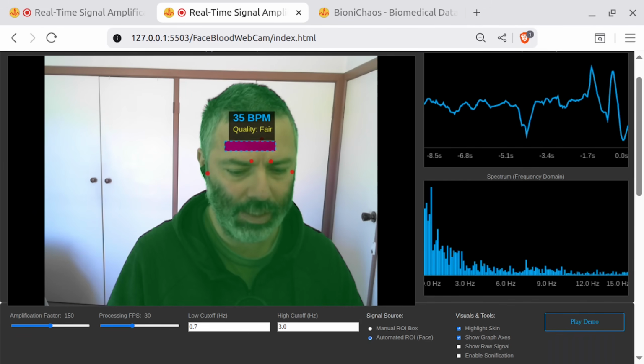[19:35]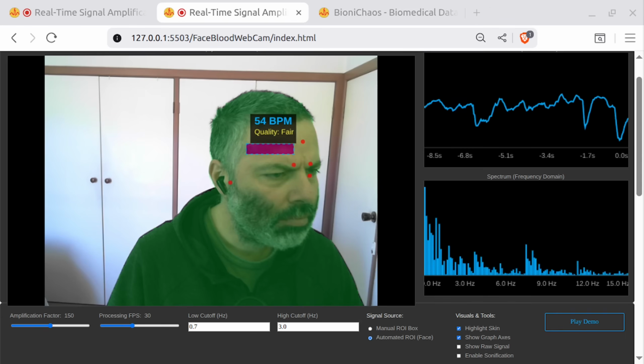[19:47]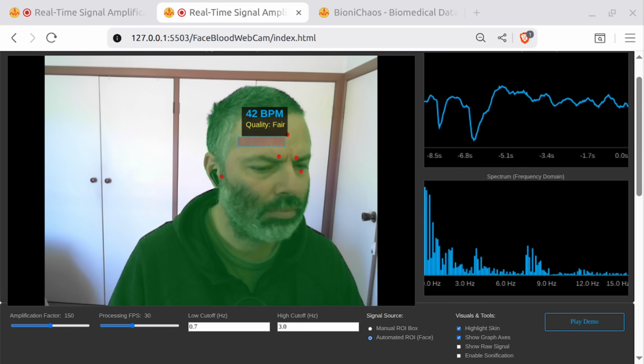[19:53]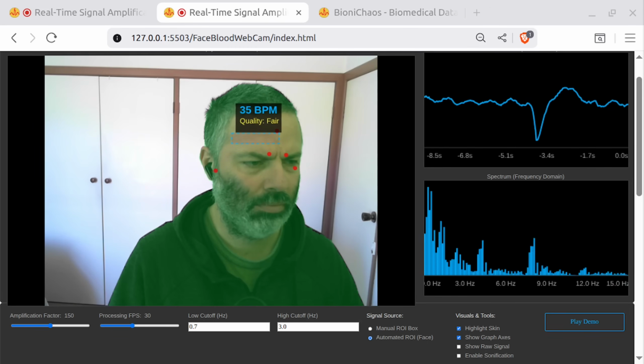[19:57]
And can you go over the controls at the bottom of the page? At the bottom of the page, there are controls for amplification factor, processing FPS, low cutoff frequency, and high cutoff frequency. You also have options to select the signal source and to toggle various visual and tool options, such as highlighting skin, showing graph axes, and enabling sonification.
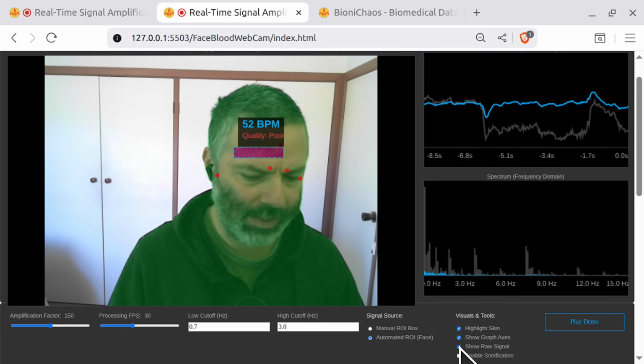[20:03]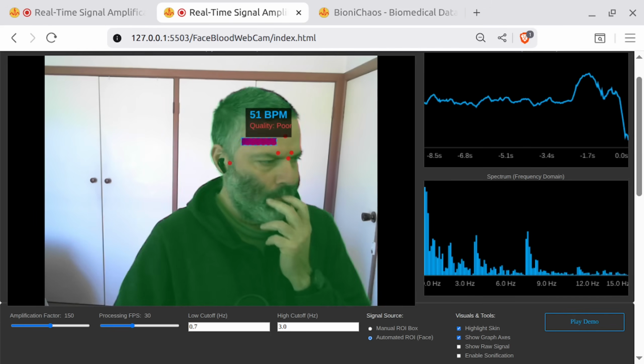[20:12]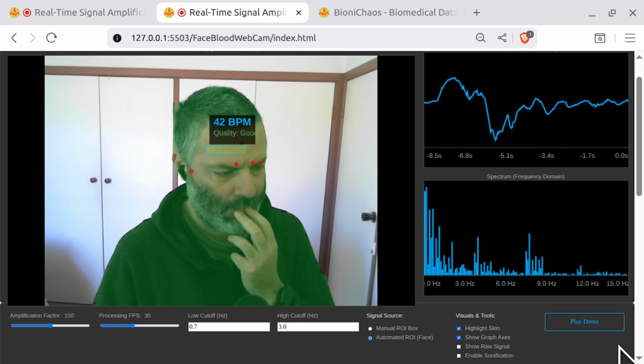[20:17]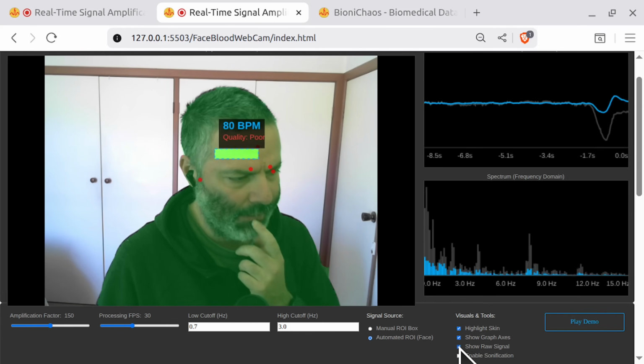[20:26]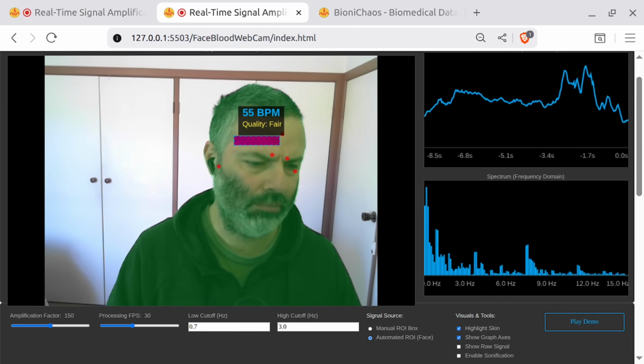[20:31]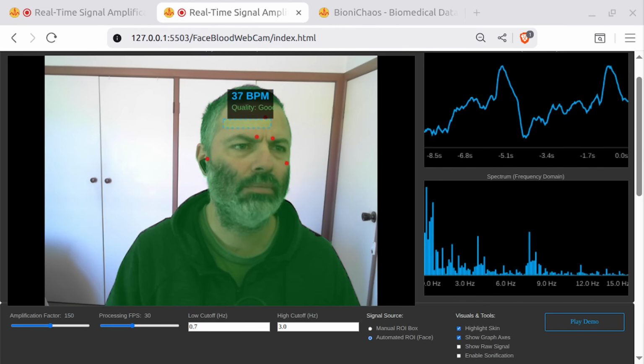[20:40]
What does the show raw signal do when I toggle it? When you toggle the Show Raw Signal checkbox, a second gray line appears in the waveform graph. This line represents the raw, unprocessed signal, shown in conjunction with the amplified signal line. How about the frequency domain, the spectrum? When the raw signal is checked, the spectrum graph also shows a second gray bar chart representing the frequency domain of the raw signal alongside the blue bars of the amplified signal.
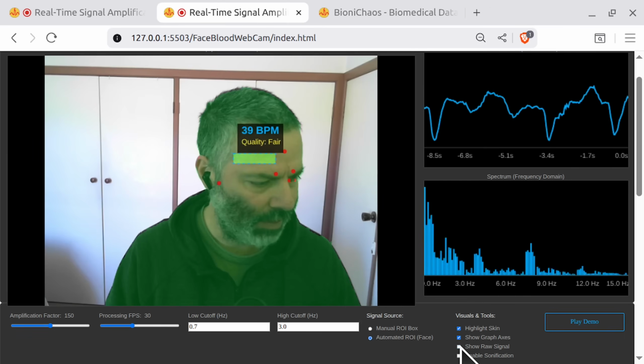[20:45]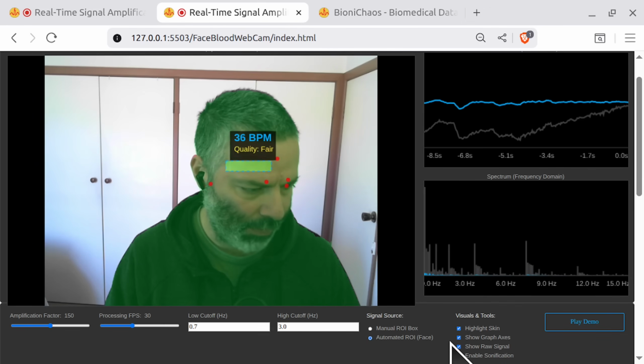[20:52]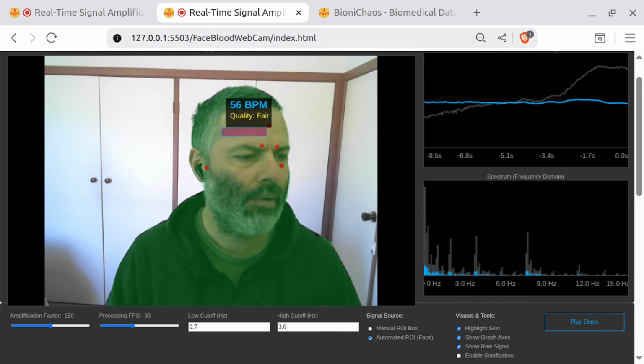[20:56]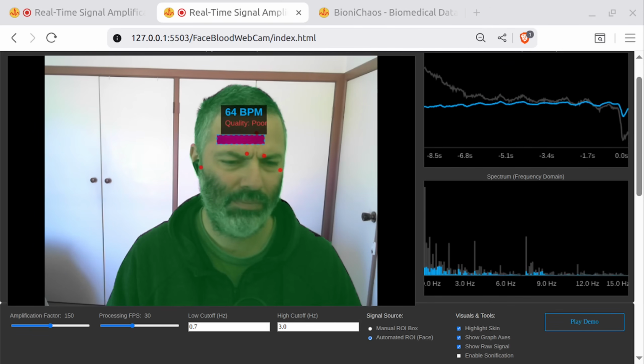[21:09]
Well, again, me toggling it, does it correspond to actually the low and high cutoff frequency of 0.7 and 3.0? Or does it do something else? Can you explain? Toggling Show Raw Signal doesn't change the values of the low and high cutoff frequencies. It simply displays the original signal alongside the filtered and amplified signal on the waveform and spectrum graphs for comparison.
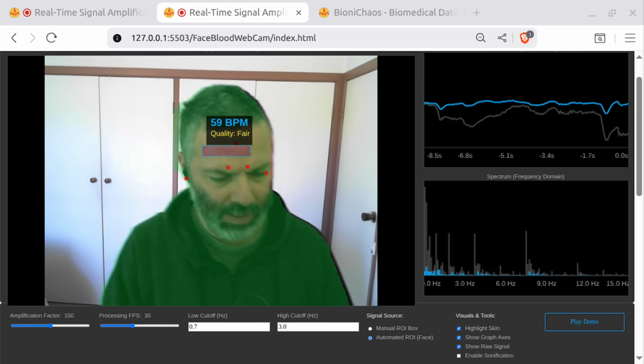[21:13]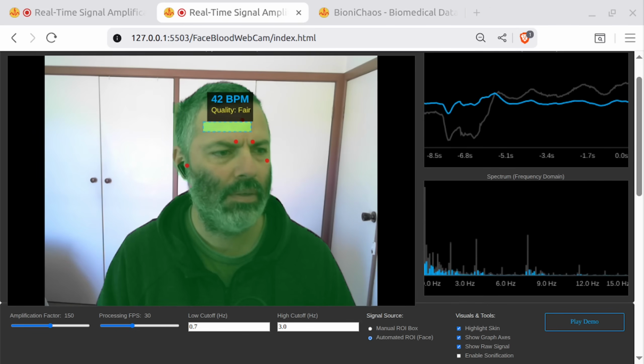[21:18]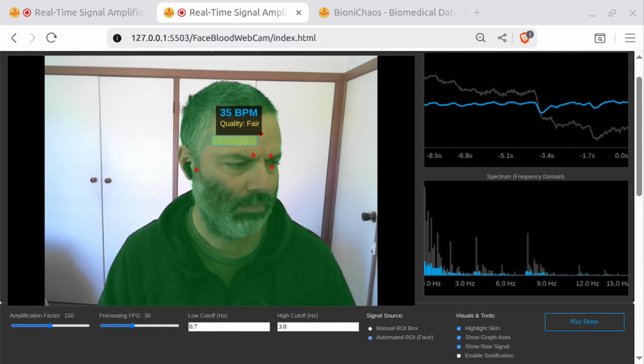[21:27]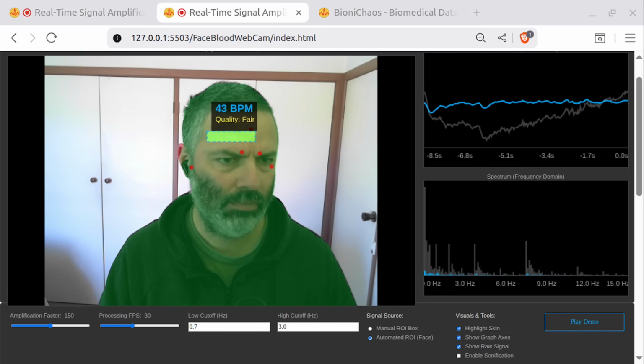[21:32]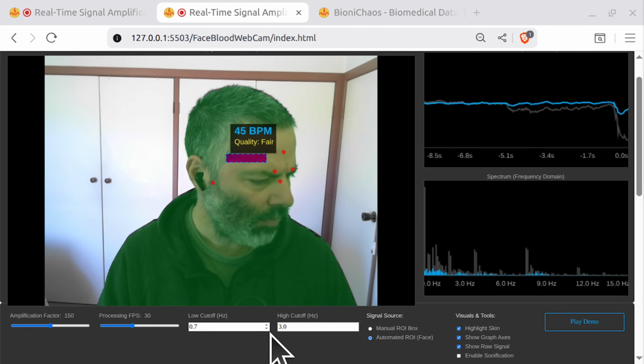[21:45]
Well, can you provide more details and repeat what you just said? Certainly. When you check Show Raw Signal, it adds a second gray line to the waveform graph, showing the signal before amplification and filtering, and also a second gray bar chart in the spectrum graph, representing the raw signal's frequencies. This allows you to compare the original signal with the processed one. It does not change the low and high cutoff frequency values. Sorry, I didn't get it.
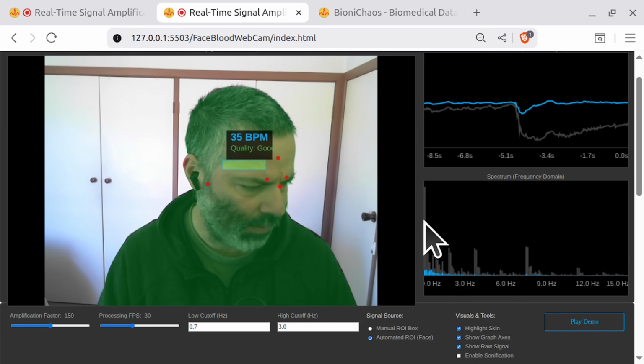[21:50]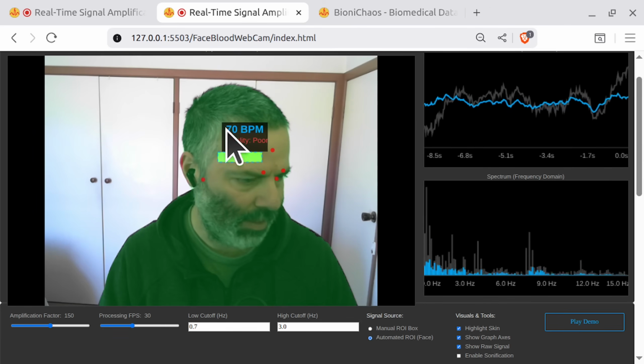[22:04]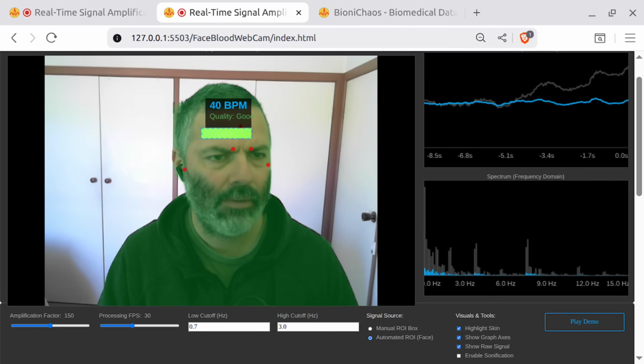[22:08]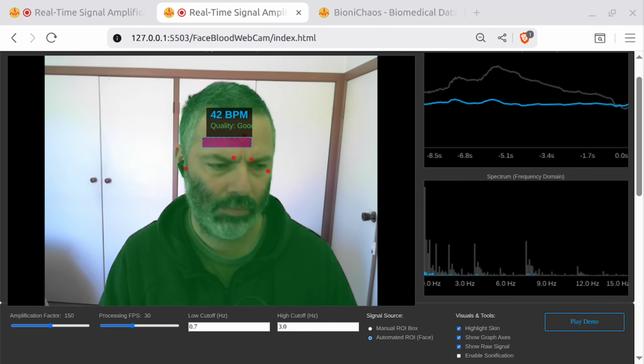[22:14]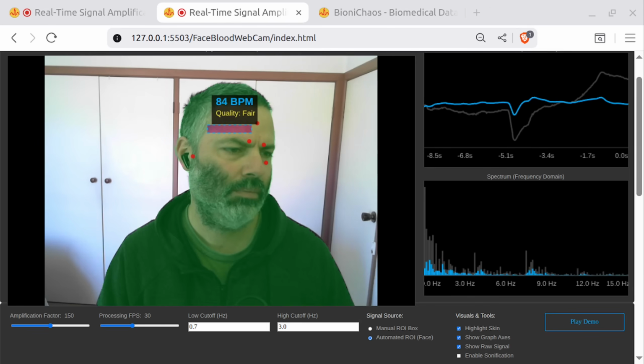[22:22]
So when I'm showing the raw signal, so now the filtering, which is the blue signal, how is it meant to be affected by the low and high cutoff? I think the low and high cutoff is only affecting the beats per minute readout measurement. The low and high cutoff frequencies directly affect the blue signal line in the waveform graph and the blue bars in the spectrum graph, as these represent the filtered and amplified signal. They determine which frequency range is emphasized. The gray signal line, which is the raw signal, remains unaffected by these cutoff values. The BPM readout is based on the filtered and amplified signal. Does that clarify it for you?
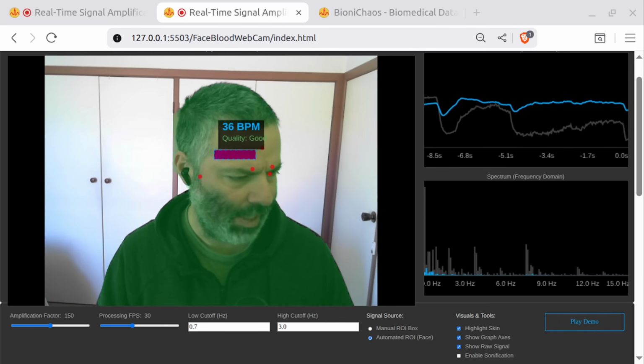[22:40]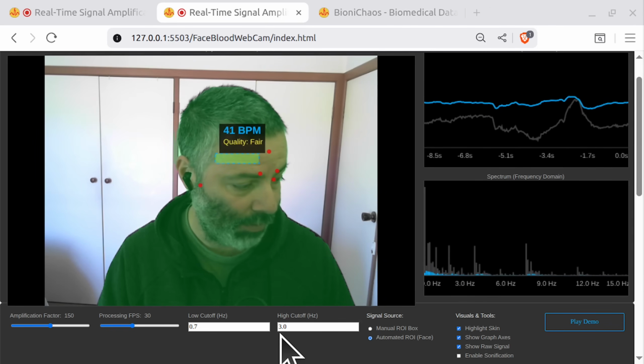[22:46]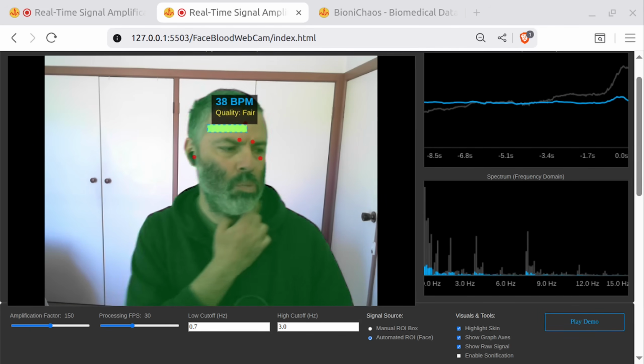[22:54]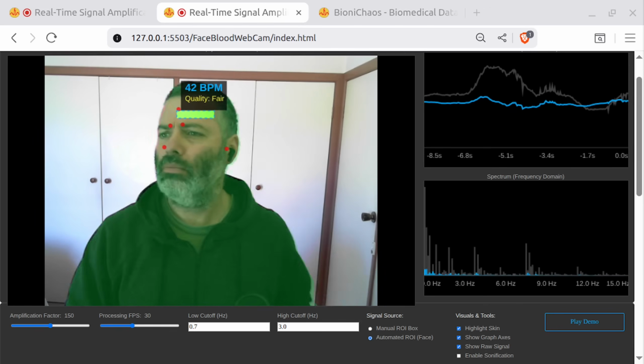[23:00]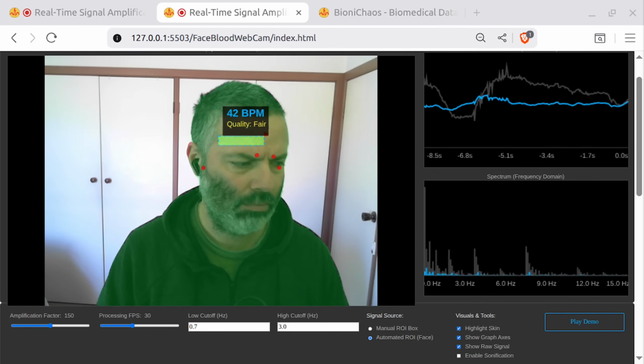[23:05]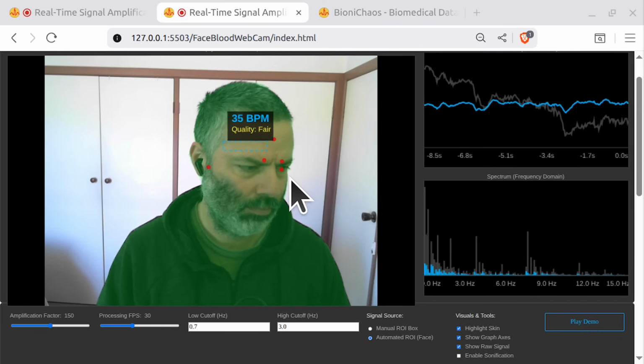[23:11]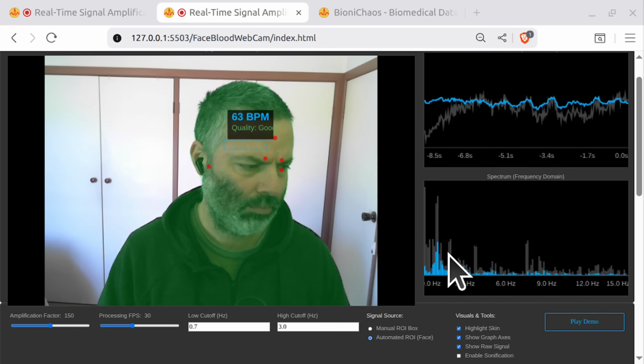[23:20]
Not really. So can you just explain why am I not seeing the 0.7 to 3 hertz section on the spectrogram? You are seeing the 0.7 to 3 hertz section in the spectrogram. The blue bars, which represent the filtered signal, are most prominent in this frequency range. The gray bars, which represent the raw signal, also have peaks there, and you can see that the filtering and amplification have enhanced this range. Do you see the difference between the blue and gray bars within that frequency range?
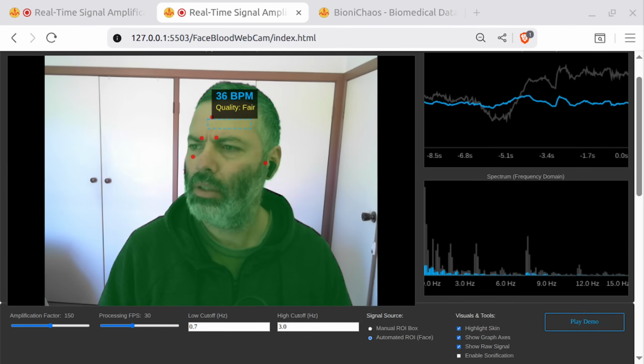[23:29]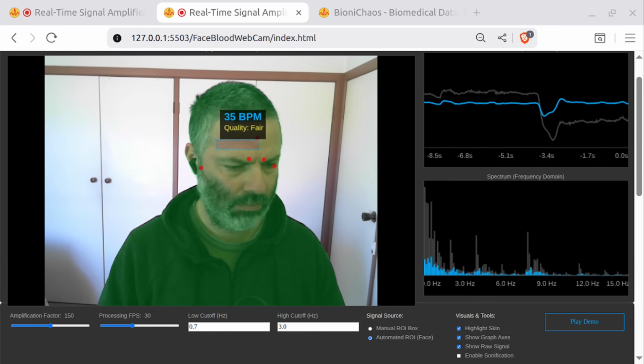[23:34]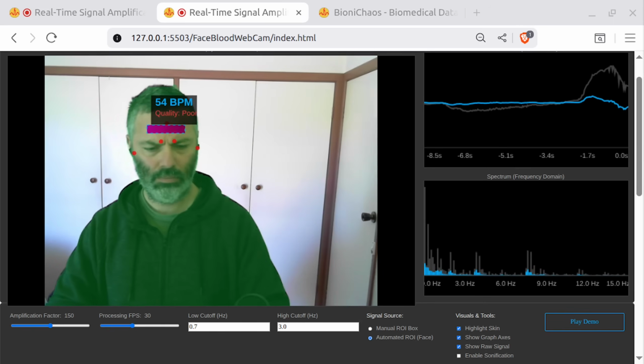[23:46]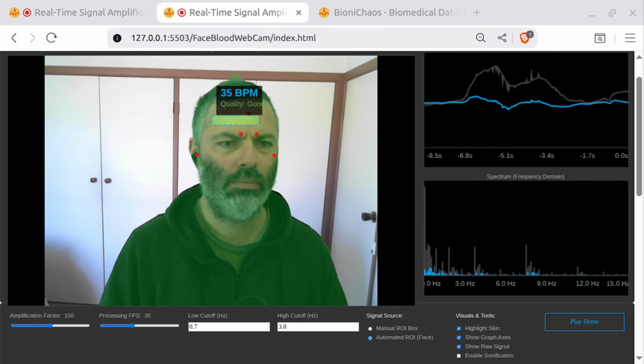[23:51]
Kind of, but is the filter not aggressive enough or something? Can you explain? The filter's effect is visible in the spectrogram. You can see that the blue bars, representing the filtered signal, are generally higher in the 0.7 to 3 hertz range compared to the gray bars for the raw signal, indicating that the filter has amplified those frequencies. The raw signal also has peaks in this range, but the blue bars highlight them more significantly.
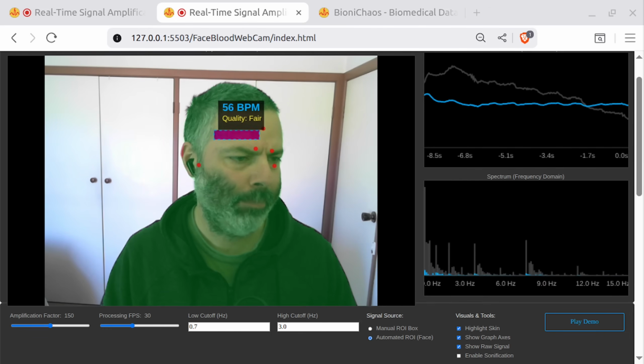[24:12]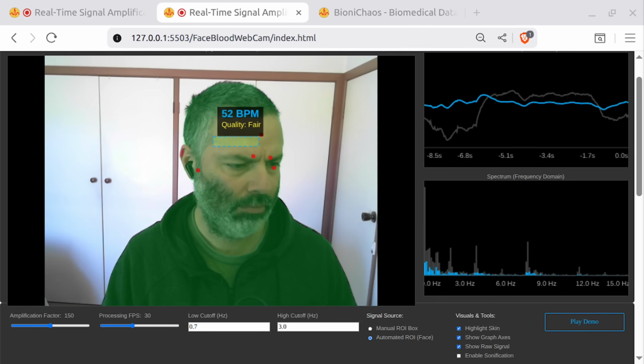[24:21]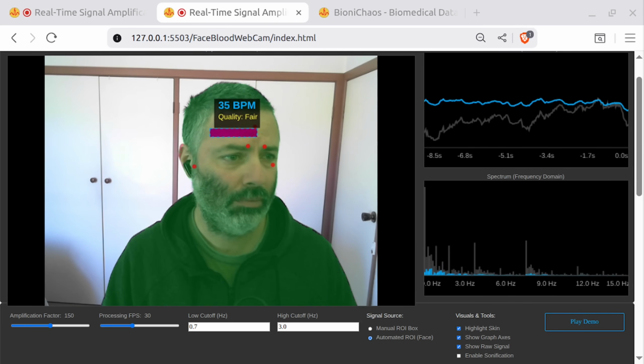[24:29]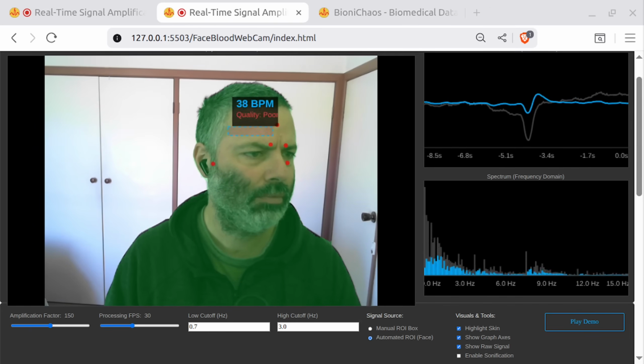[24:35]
Can you explain it like to a first-year university student? Imagine the gray bars in the spectrogram are the original, raw signal with a lot of different frequencies, kind of like all the sounds in a busy room. The blue bars represent the signal after it's been filtered. This is like tuning in to a specific radio station, where the filter helps emphasize the frequencies in the range you're interested in, like the 0.7 to 3 hertz for your heart rate, while reducing the others so you can clearly see the heart rate signal peaks.
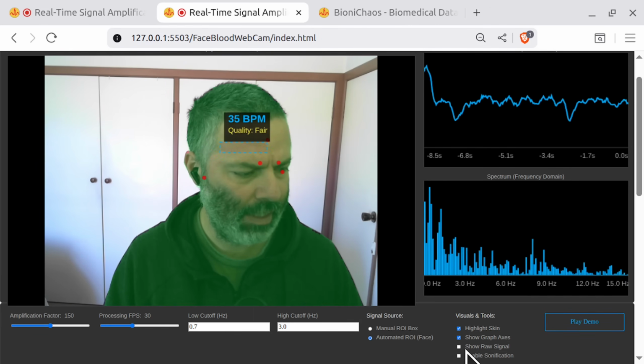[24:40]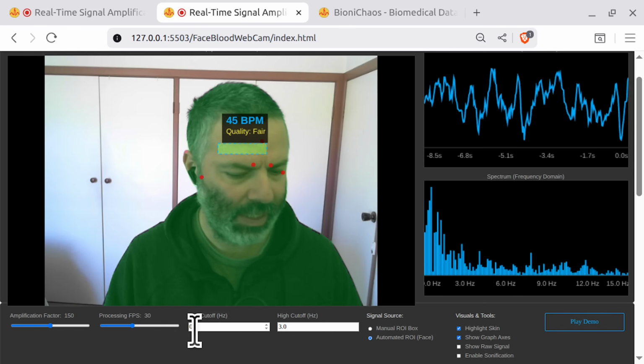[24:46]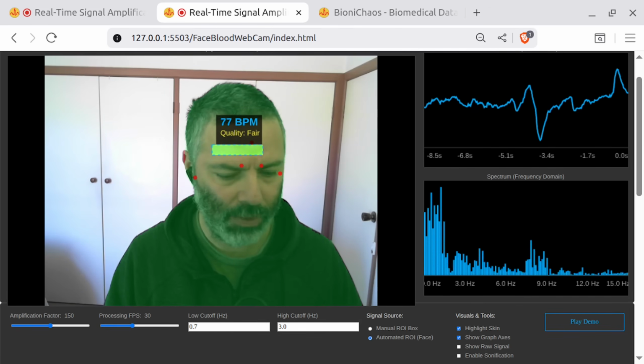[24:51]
But the filtered signal, the blue lines, are mainly not between 0.7 and 3.0. Can you explain why? You're right to point out that the blue bars, which represent the filtered signal, extend beyond the 0.7 to 3.0 Hz frequency range.
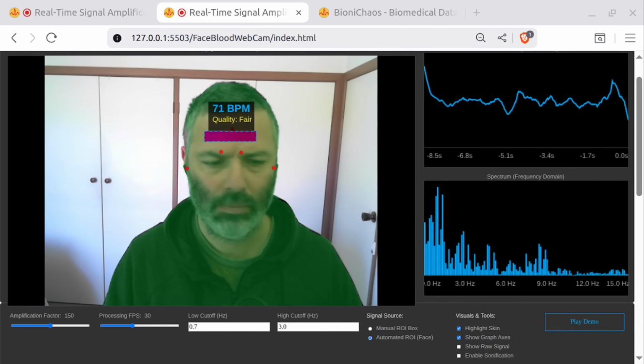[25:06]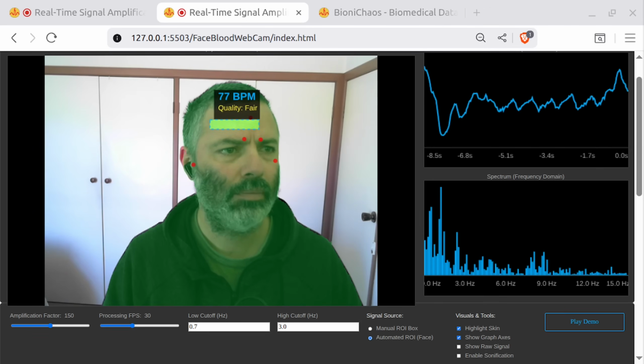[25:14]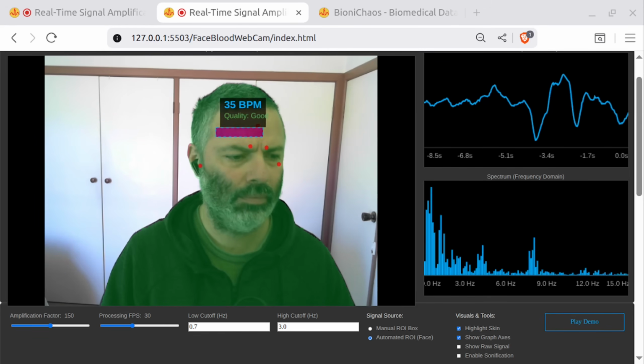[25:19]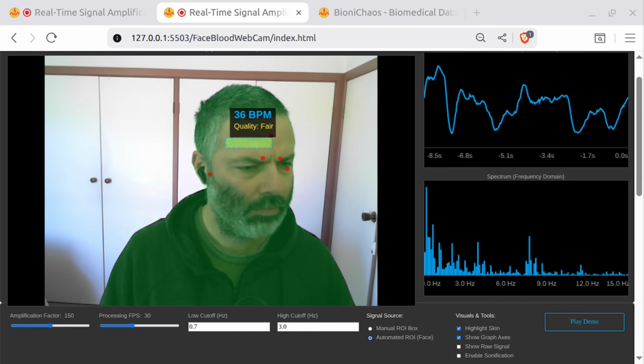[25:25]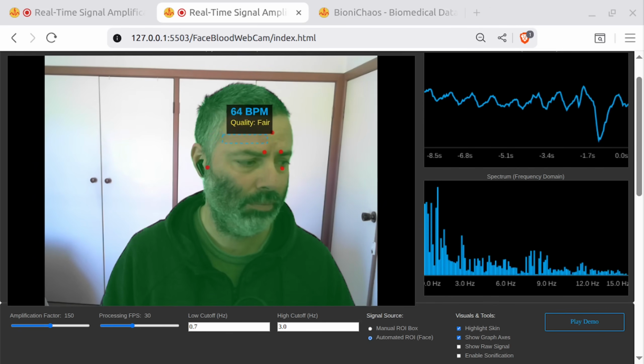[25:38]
The purpose of the filter is to amplify the signals within that band, which you can see because the blue bars are higher in that range than the gray bars representing the raw signal. However, filters aren't always perfect and might let some frequencies outside the desired range still be visible, although usually at a lower level. The blue line also shows a strong peak around 1 to 1.5 Hz, which is consistent with the displayed heart rate of around 60 to 90 BPM, beats per minute. Does that help clarify what the filter is doing?
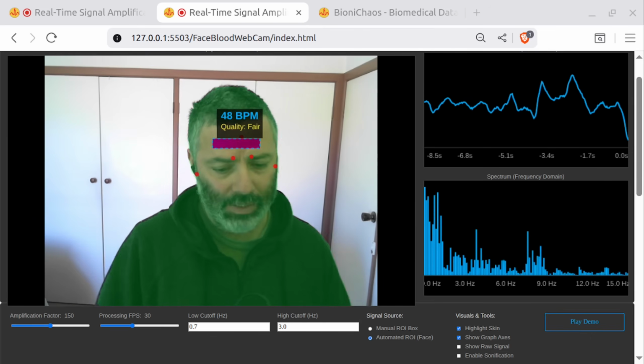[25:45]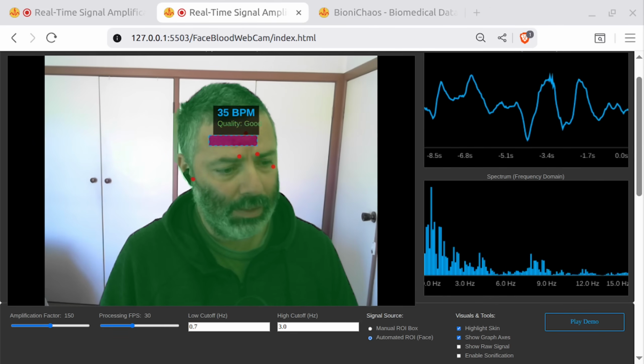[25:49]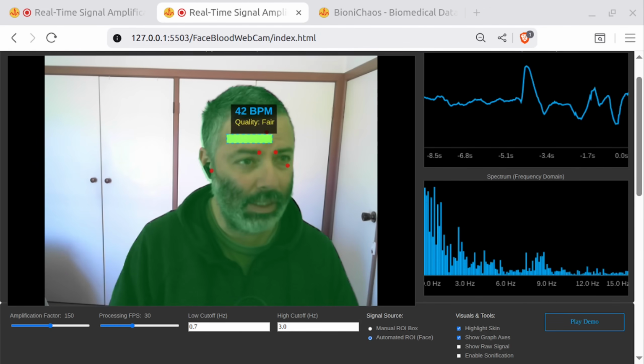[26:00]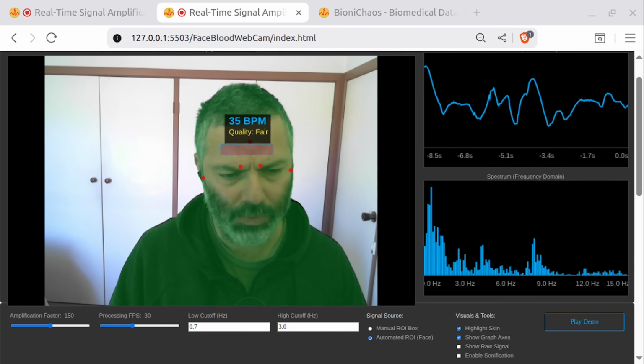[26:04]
It doesn't make any sense, I don't know. Anyway, this chat with the prompt engineer is already 2 gigabytes, so if we restart, if we resume the stream, would it go? Somehow saving all the videos and stuff in the browser, which is a bit weird.
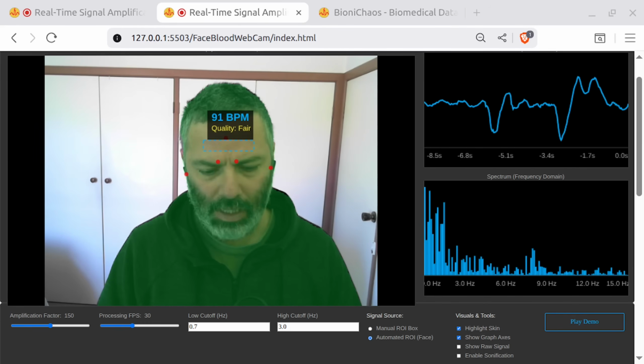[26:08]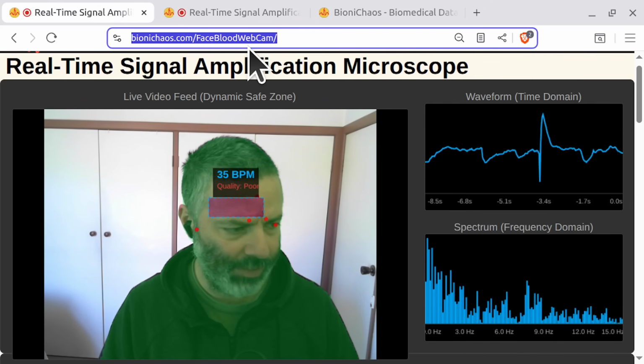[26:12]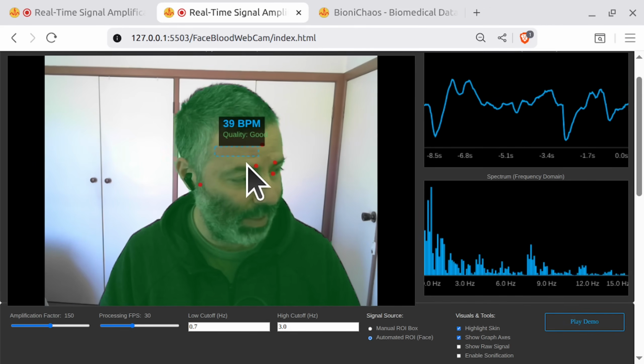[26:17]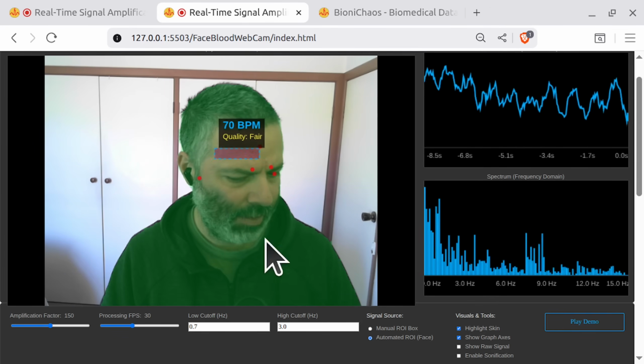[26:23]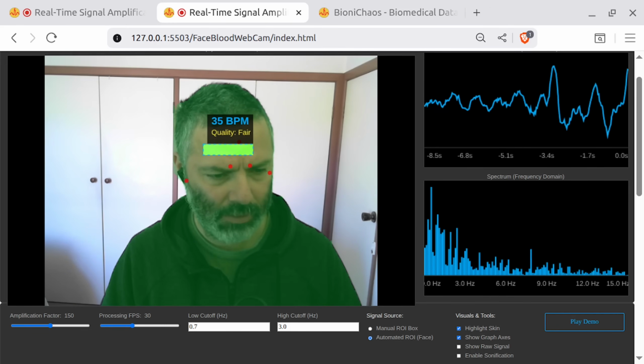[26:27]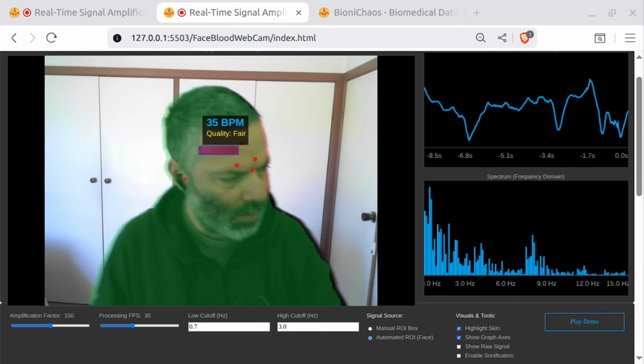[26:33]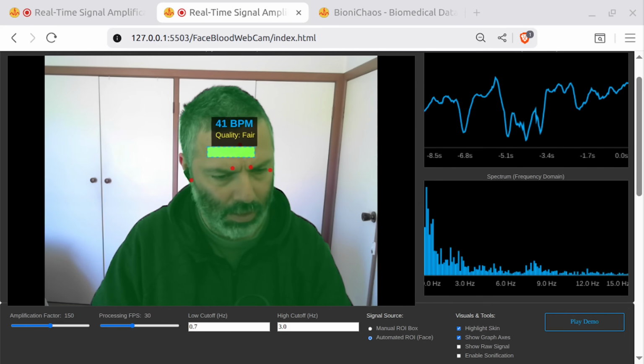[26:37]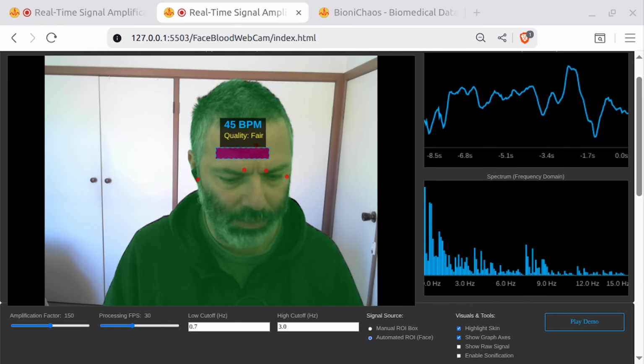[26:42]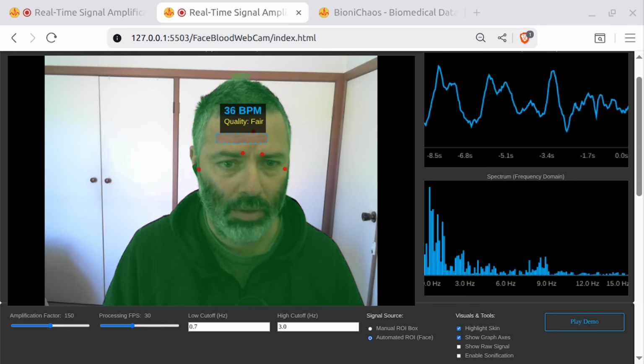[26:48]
Something like this should actually indicate the high quality signal. Anyway, that's the previous version. We have it deployed. This one is a bit improved in terms of the ROI selection there. Is it good? Nah. Show me quality, good quality before. It's obviously not. Yeah, the quality metric there is a bit confused. First of all, it's fluctuating quite a bit. Most of the time, I understand when I'm moving it will be fluctuating, which is fine. Mostly it should just stay in poor or something. When I'm not moving, it still fluctuates quite a bit. So that's what I'm worried a bit about.
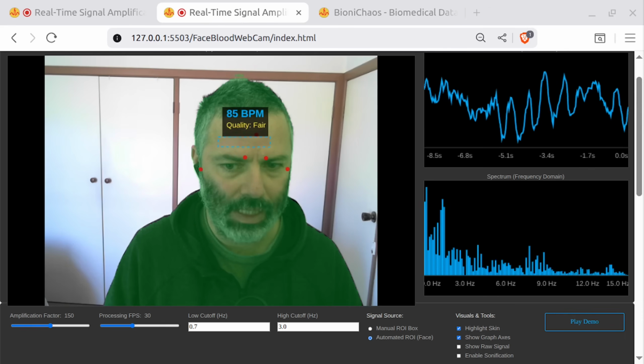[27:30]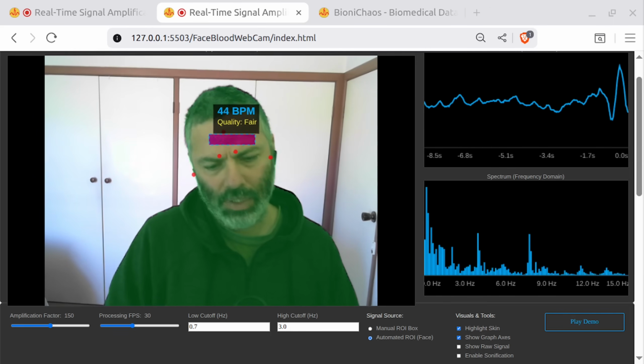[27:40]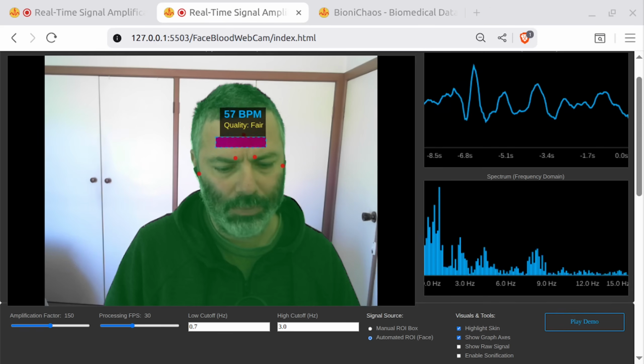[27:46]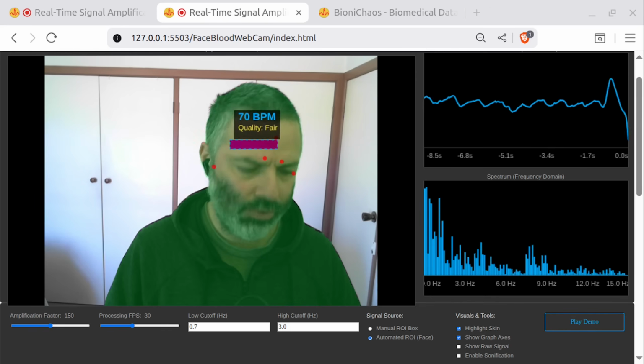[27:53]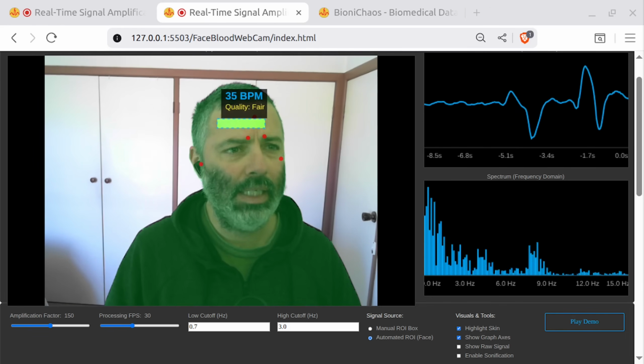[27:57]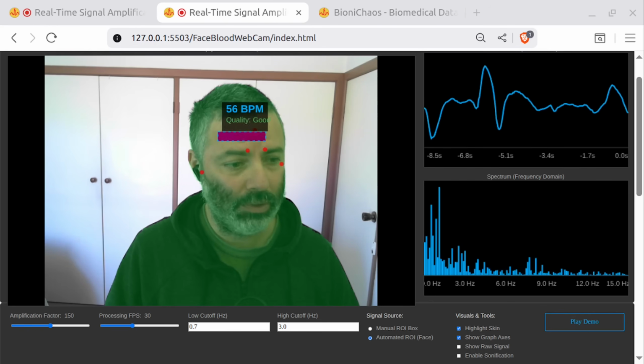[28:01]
Because in a situation where we have a good quality signal, the time series looks good, but the quality indicator is fluctuating between fair and poor and good. That metric should really look between the low cutoff and high cutoff and see if we have a distinct strong signal there. It should be like a single spike in the spectrum. That in theory is what should be happening. I'm not sure if the code actually does it. Maybe there's some sort of placeholder, or the code is incomplete, or needs to be improved. So we need to check that. So we need to improve this prompt by another pass before we give it to the developer, or not.
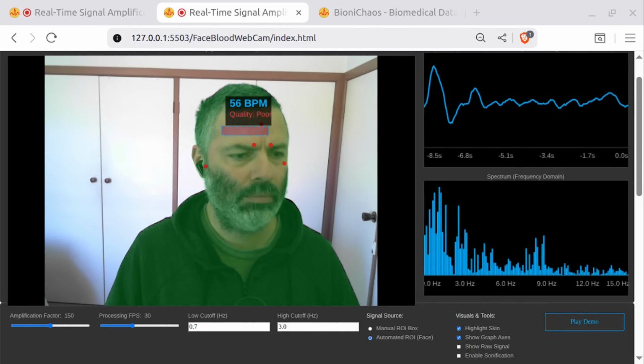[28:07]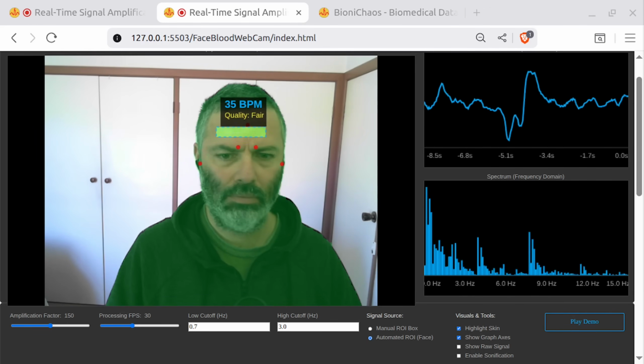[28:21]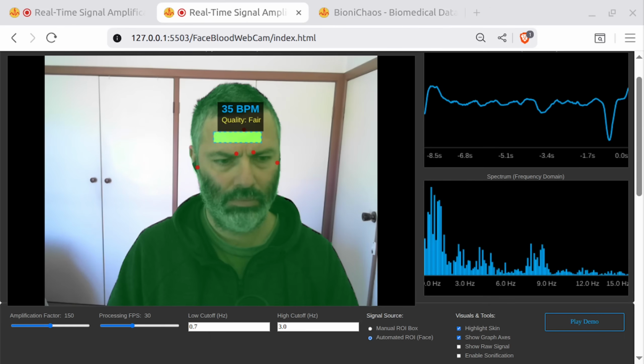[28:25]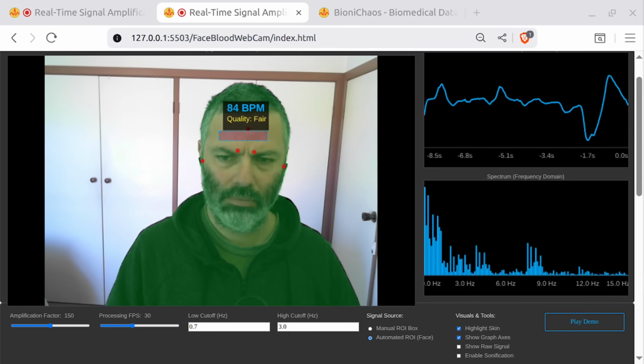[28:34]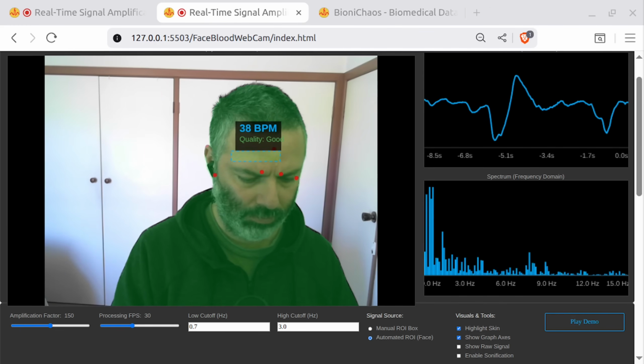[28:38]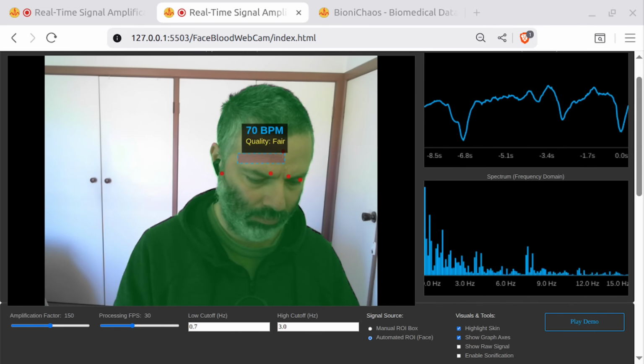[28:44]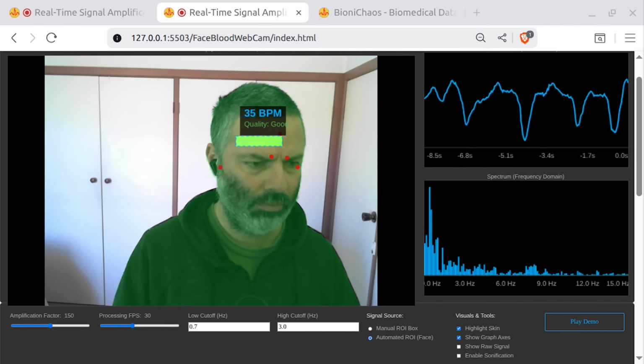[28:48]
The technical review came back. They called it a top-tier browser-based project. They were particularly impressed with the integration of WebGL for the video amplification. Naturally, we're doing real-time per-pixel RGB forensics on human skin. If you're not using the GPU for that, your code is just standing in line waiting for the CPU, muttering about how slow things are. It's about avoiding these slow canvas operations. Offloading the green channel injection to the fragment shader is purely about frame budget. Exactly. We hired the GPU specifically to handle the pulse glow. It's an executive decision. The pulse is shy, barely changing the skin color, so we use the filter to scream, look at this subtle green change, and the WebGL renderer ensures that scream is hardware accelerated.
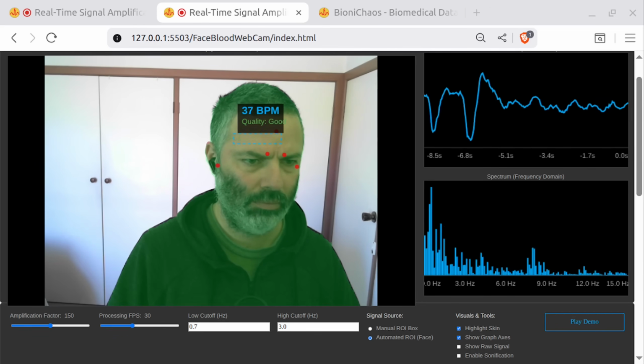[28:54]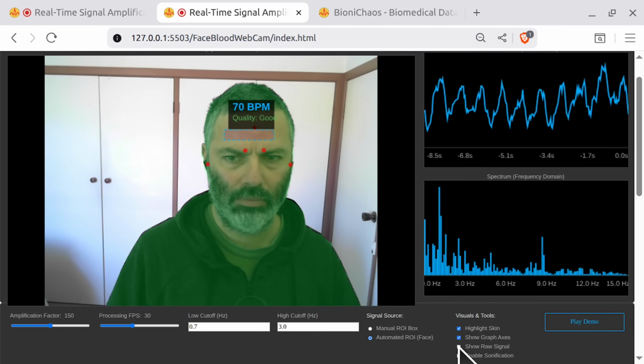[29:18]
They appreciated the signal processing stack too, especially the use of cascaded low-pass filters for bandpass operation, and the detrending to remove the slow light drift. The filter section. That's where we tell the raw signal, we appreciate your enthusiasm, but please discard all frequencies related to slow cloud movements, lamp flicker, and the user's existential dread. The detrending is just making sure the signal doesn't think a change in bulb brightness is the user trying to run a marathon. And the FFT implementation got a nod, specifically the use of the Hann window to mitigate spectral leakage. The FFT is truly magic. It takes this time-based squiggly line and goes, I suspect you contain a sine wave that repeats 1.2 times per second, then instantly pulls the BPM number out of the frequency ether.
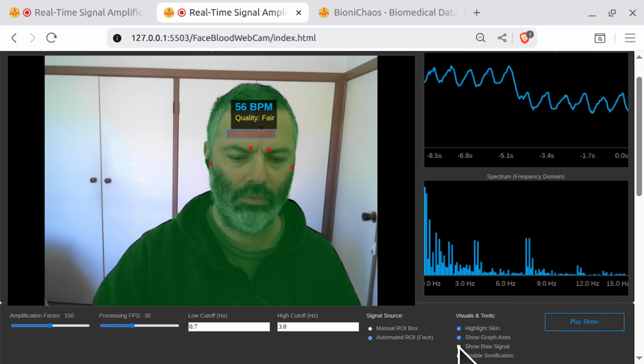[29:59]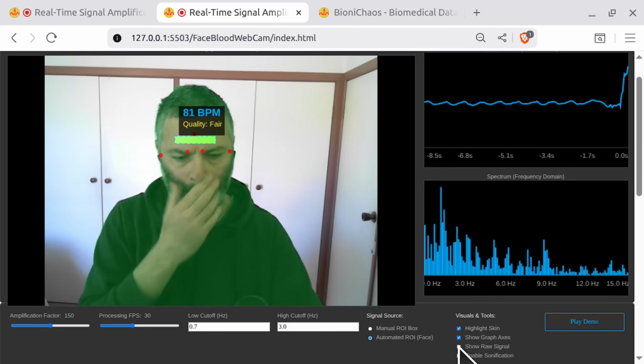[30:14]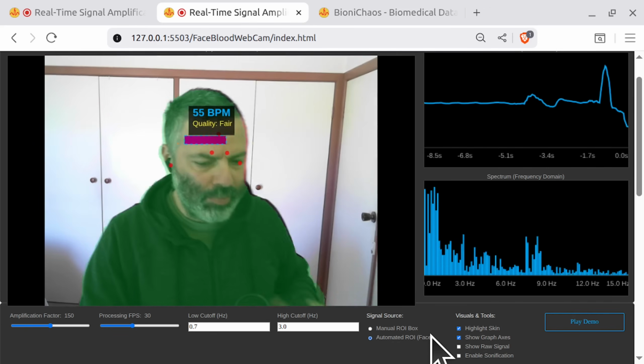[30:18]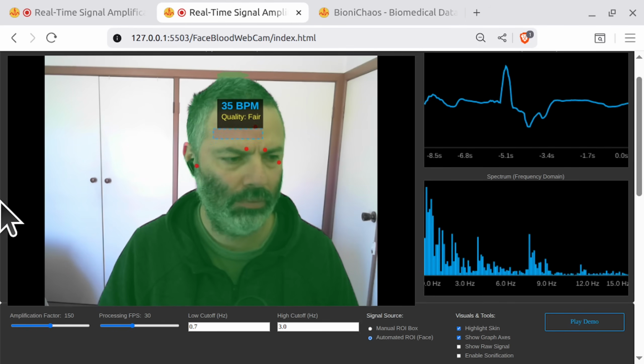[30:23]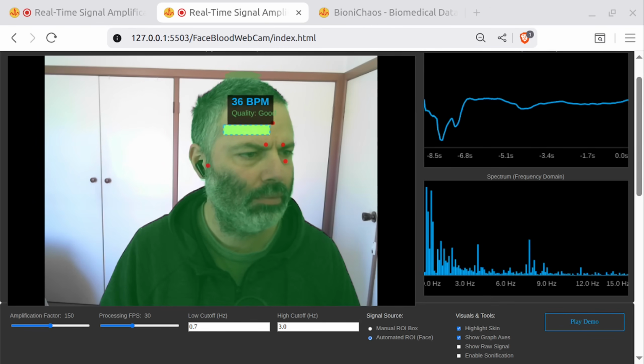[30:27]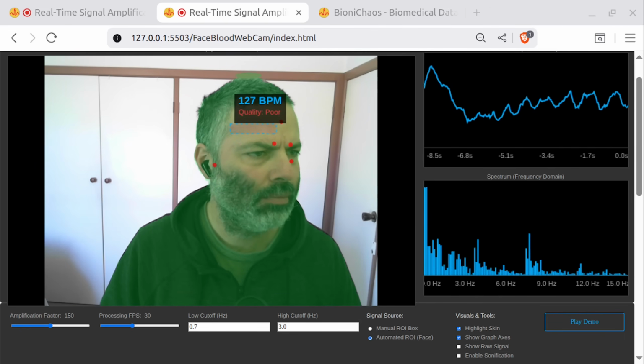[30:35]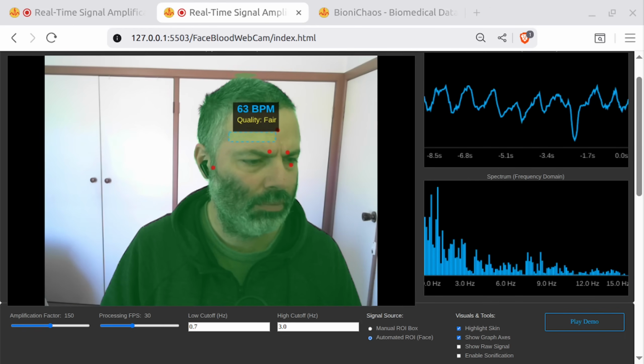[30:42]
It's high-level statistical divination. But let's talk about the failure state. The reviewer captured the moment the BPM dropped to 42. Ah, the sloth mode incident. The picture of health suddenly becomes a heavily medicated rainforest creature. That screenshot perfectly illustrates the vulnerability to motion artifacts. A slight head movement or eyebrow raise introduces a strong, low-frequency signal that is right on the edge of our passband, 0.7 hertz. The FFT correctly identifies this new, louder noise peak as the dominant rhythm. The code is technically accurate, but physiologically wrong. It's a crisis of identity for the algorithm. It sees a massive mountain of noise and a tiny pulse bump, and it says, well, the biggest peak wins. Enjoy your sloth BPM. I loved how the quality metric stayed fair.
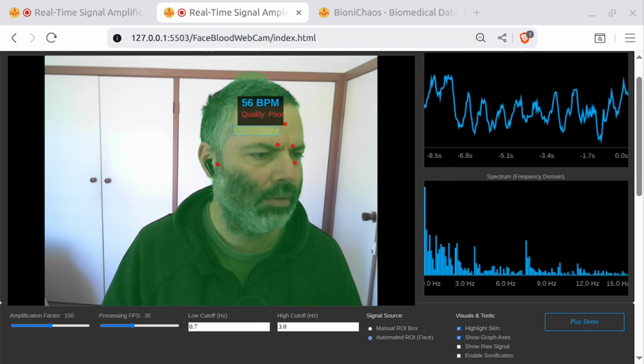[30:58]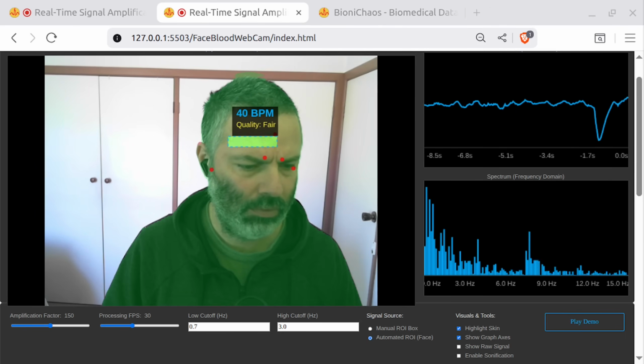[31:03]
This is like a doctor shrugging and saying, the numbers are bad, but the math checked out. It highlights the need for more complex, motion-robust algorithms, which they mentioned as a future direction. Maybe something that incorporates the movement of the face landmarks to dynamically suppress the motion component. Or we could just make the user wear a neck brace.
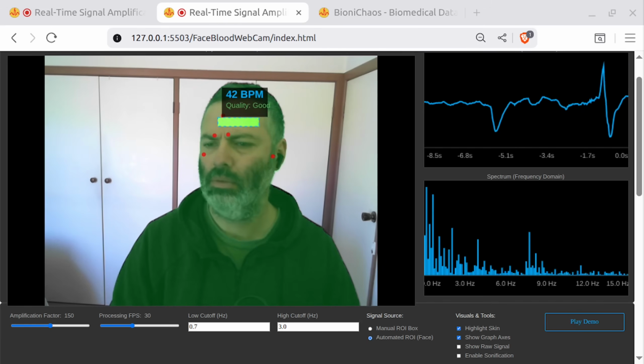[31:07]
Simpler. But seriously, the automatic ROI using MediaPipe was a smart choice. We don't want people trying to measure their pulse off a coffee mug. The face is the sacred measurement zone.
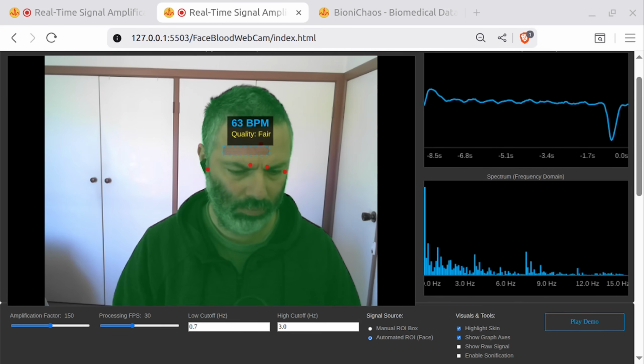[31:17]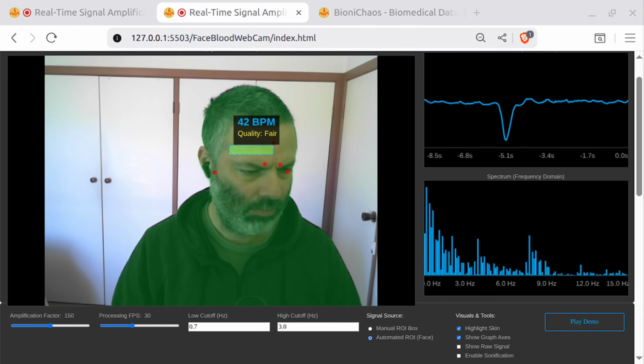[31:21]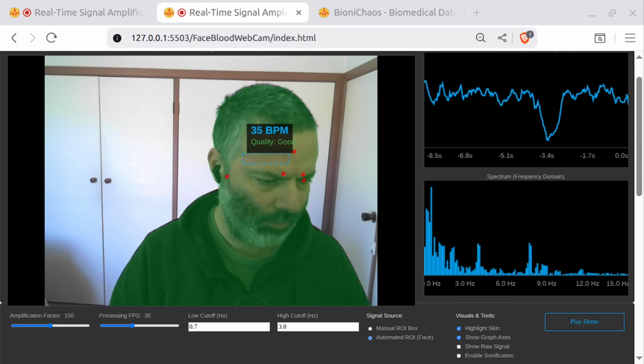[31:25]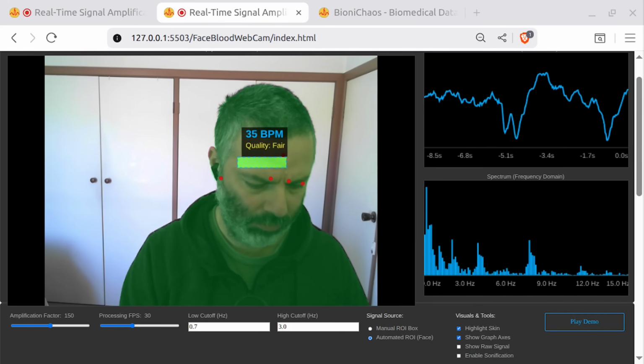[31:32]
Agreed. Overall, the review confirms we hit the mark. Technically advanced, robust, and highly educational. It's a great example of bringing advanced signal processing out of the lab and straight into the browser. We built a technological window into the vascular system, and it runs entirely on JavaScript.
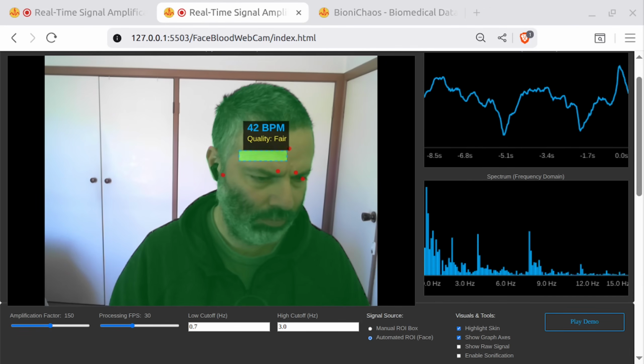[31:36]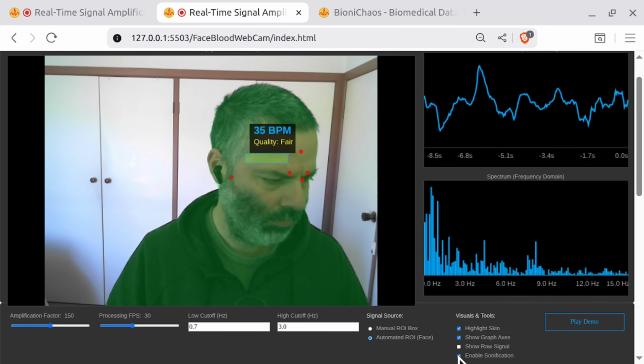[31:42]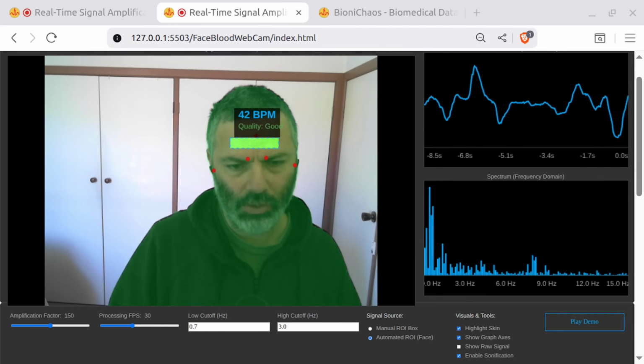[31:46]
I'm proud. Now, if you'll excuse me, I'm going to run the Sonification and listen to my own terrifying amplified heartbeat. It sounds surprisingly like an old modem trying to dial in. Yeah, the Sonification is a bit, I wonder how useful it is. It doesn't sound like heartbeats.
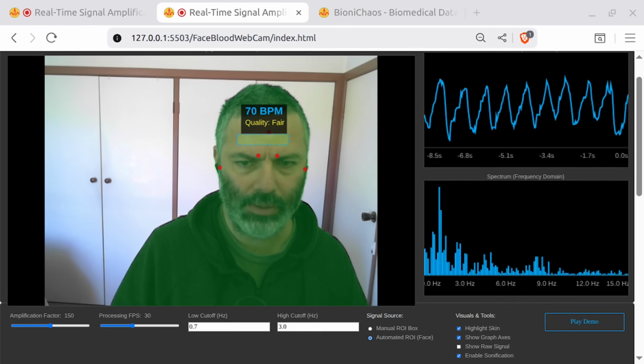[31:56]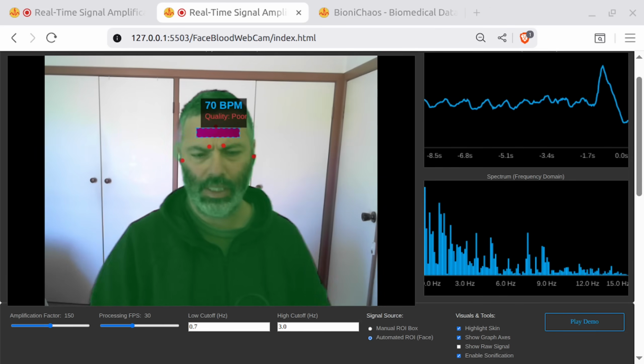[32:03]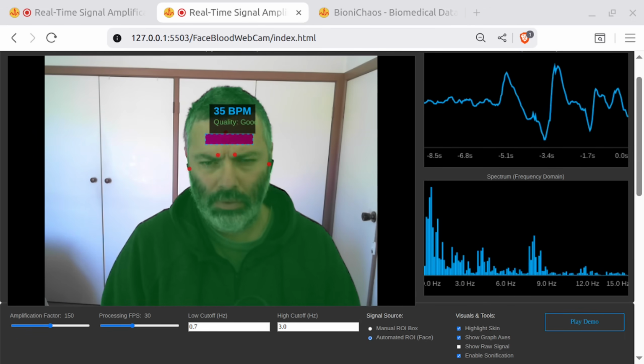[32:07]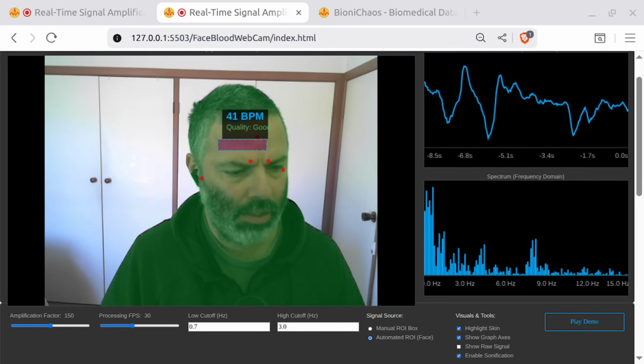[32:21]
So now it's actually pixels, so this is amplified. Within the ROI, when I'm talking and stuff, we're getting more noise. I have to move. Should the ROI be a bit longer, wider? Don't know. What do you think?
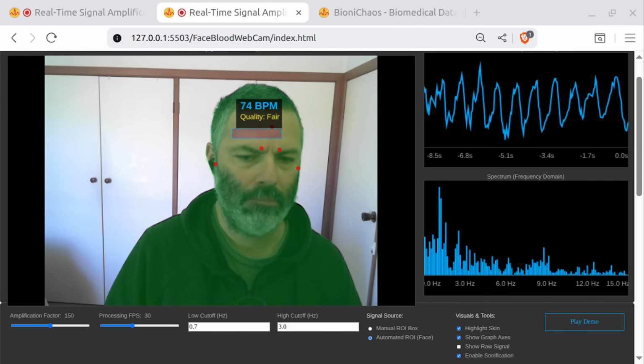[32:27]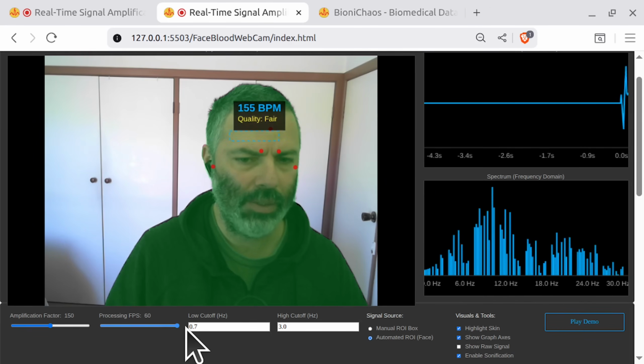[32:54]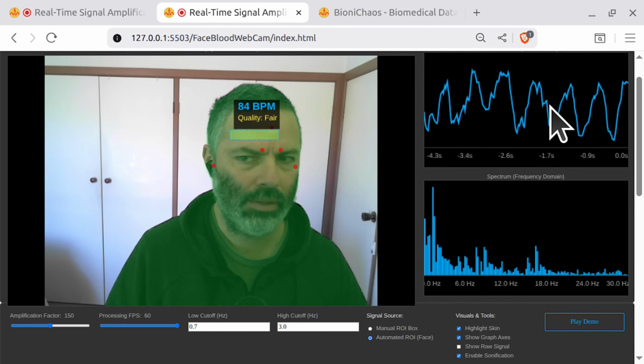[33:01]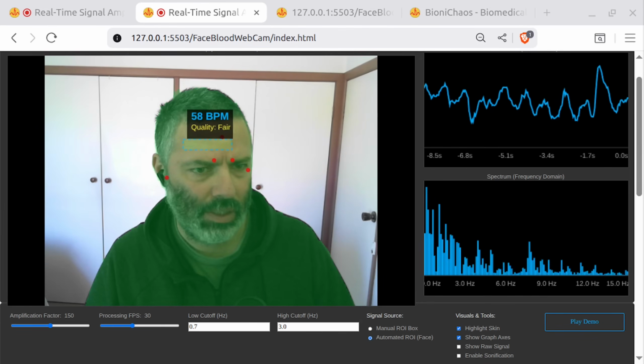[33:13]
Yeah, we're generating code. Hopefully we fix the quality metric there. We'll do some smoothing to it, so it's not fluctuating as much. The other thing is that now that it's 70, when we change the FPS, I should be able to go all the way up to 60. The signal is there. Pretty sure that's my blood fluctuation, whatever, but the metric is incorrect. Yeah, there's some mistakes.
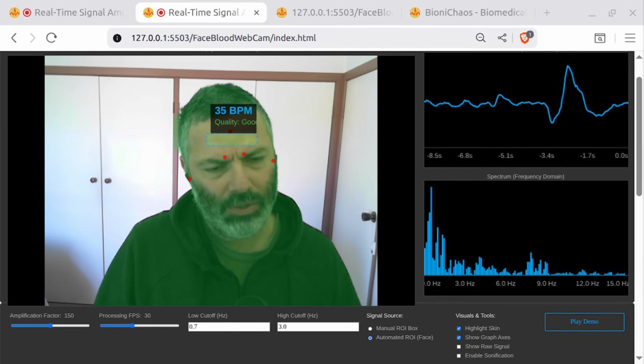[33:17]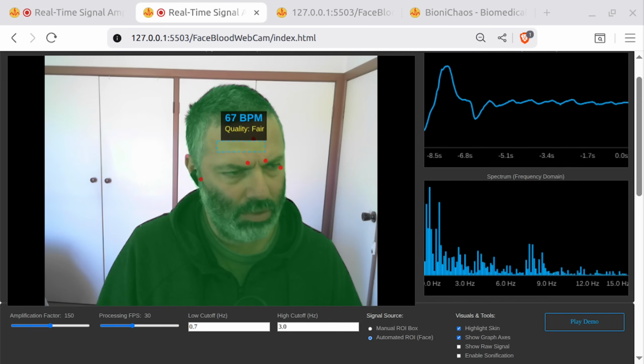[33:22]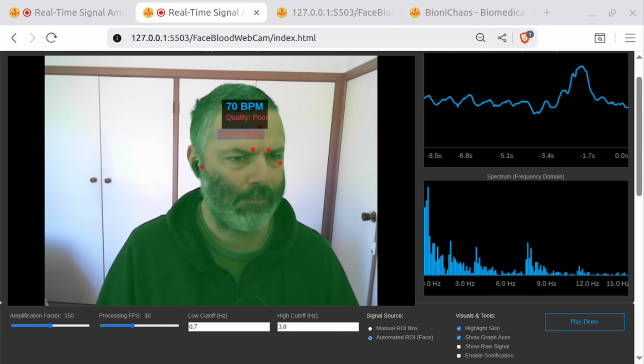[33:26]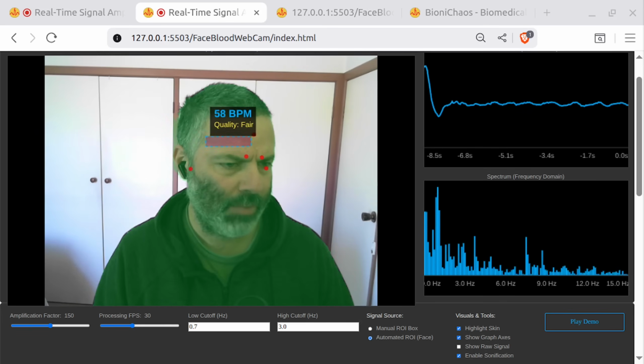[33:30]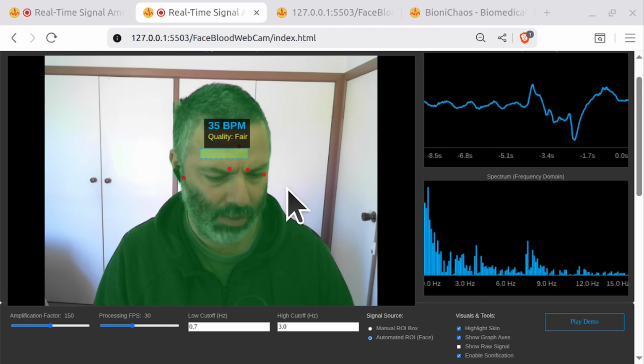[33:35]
How about if we turn the temperature to 0 or something? If we set the temperature to 0, regenerate the code. Exponential moving average. Yeah, so we want to average the quality there because it just keeps fluctuating quite a bit.
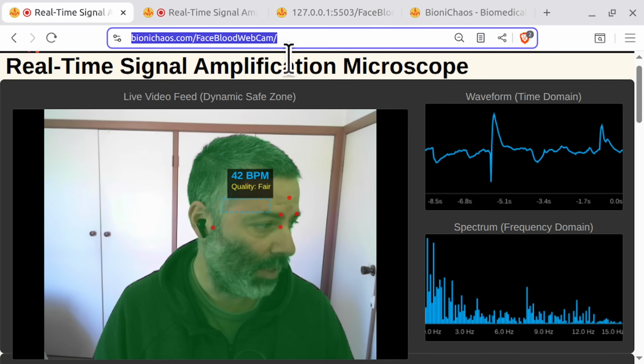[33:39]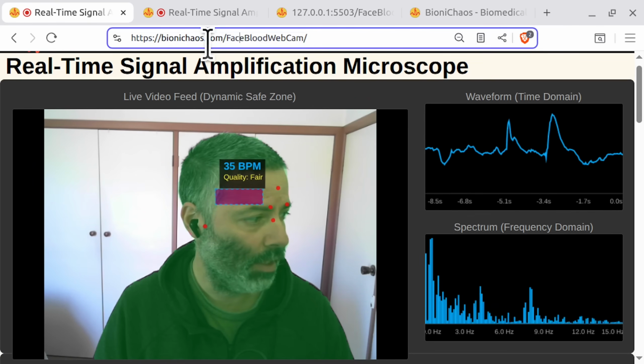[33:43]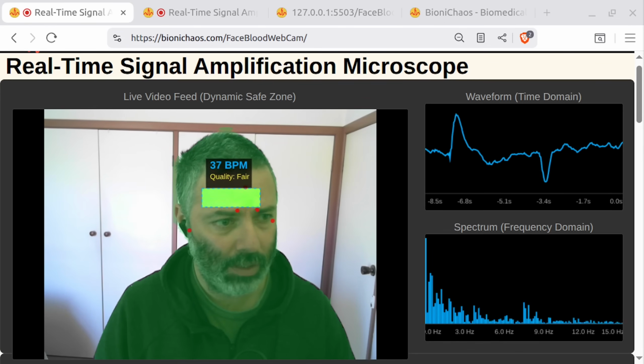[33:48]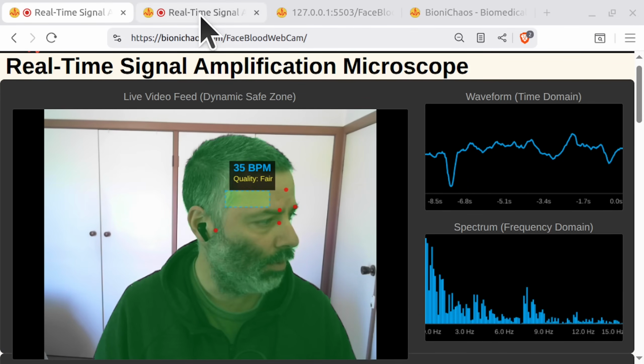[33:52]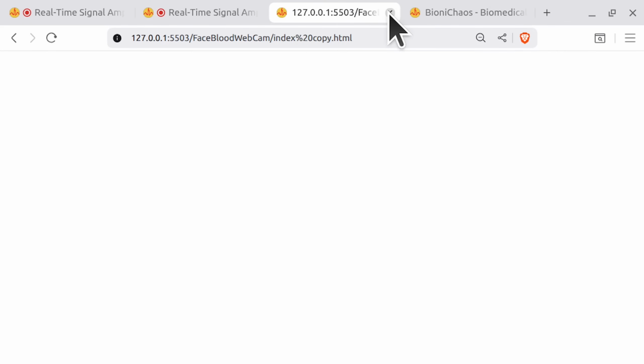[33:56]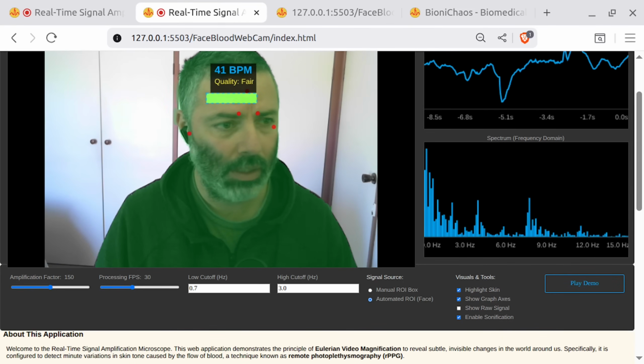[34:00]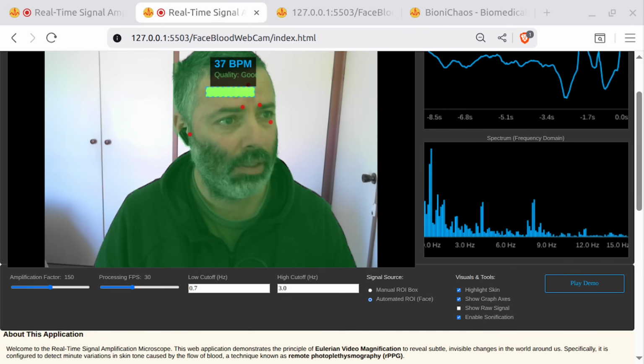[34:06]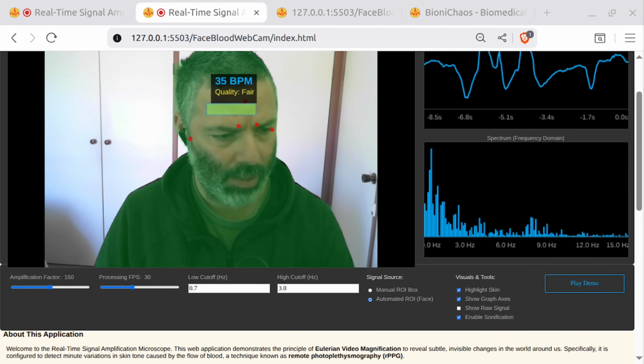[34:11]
You're not here for my singing, are you? I don't know, maybe you are. Okay, we'll have another version.
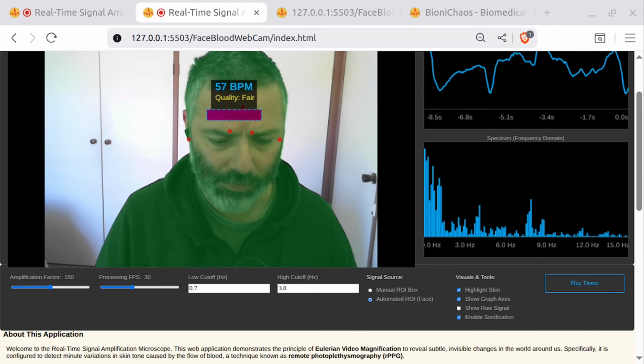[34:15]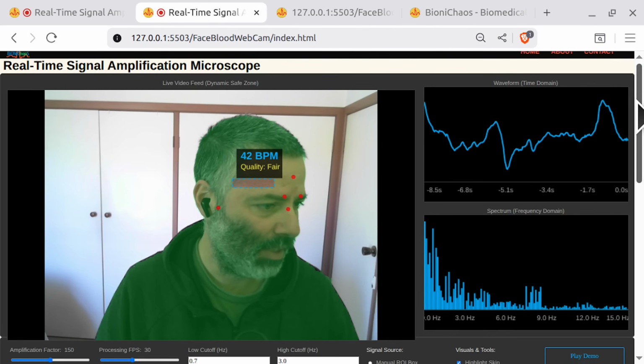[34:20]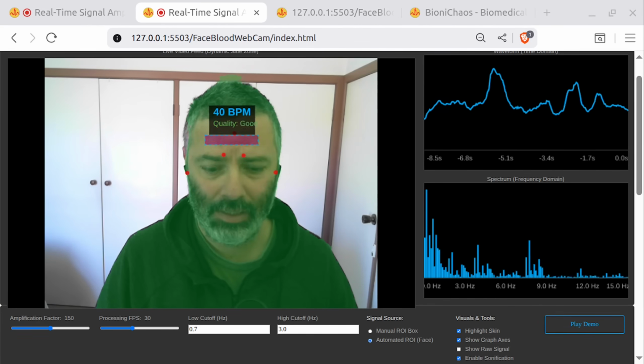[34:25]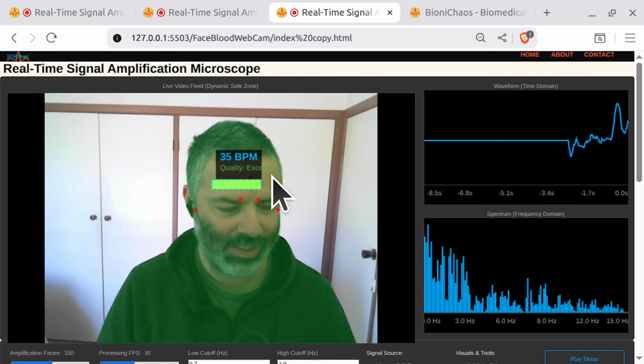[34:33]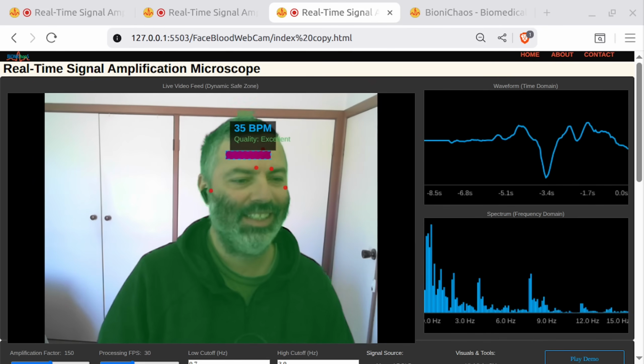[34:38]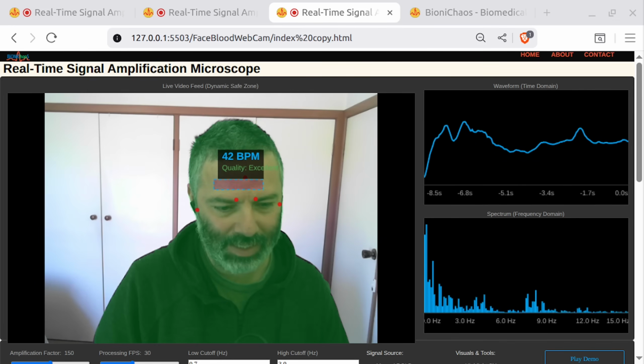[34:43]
Trying to fix that fluctuation of the quality metric, of the quality measurement. It just keeps giving us nonsense. There's essentially two problems with it. One is that it's fluctuating way too much. Now it just says excellent all the time. Okay, now it just says excellent all the time. It's not changing at all. So that might be a problem.
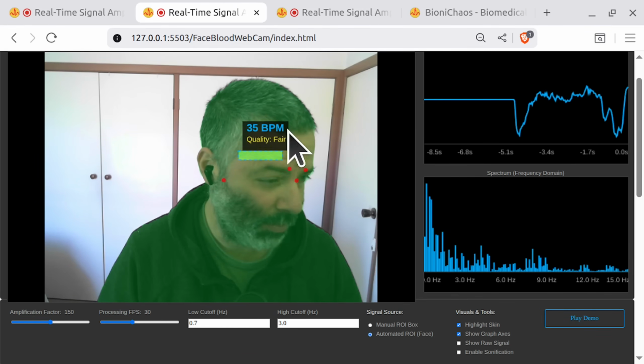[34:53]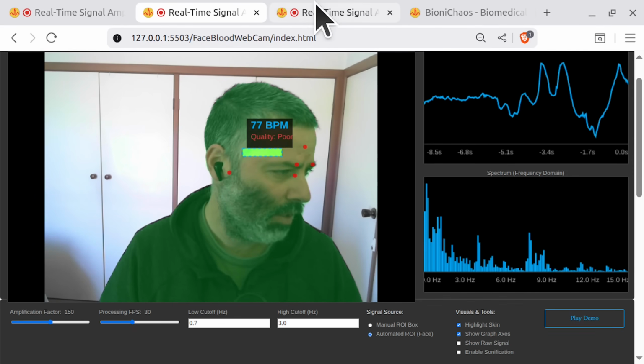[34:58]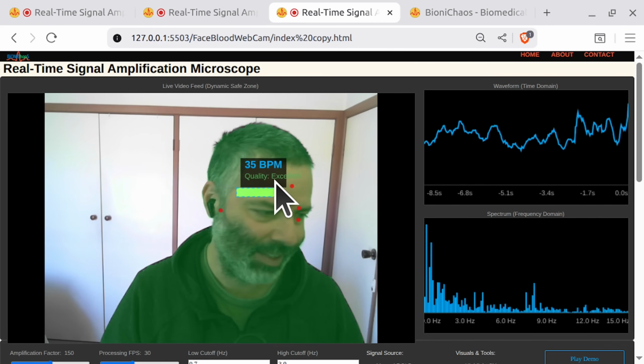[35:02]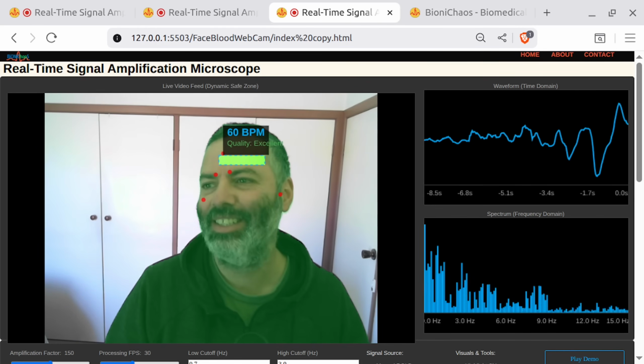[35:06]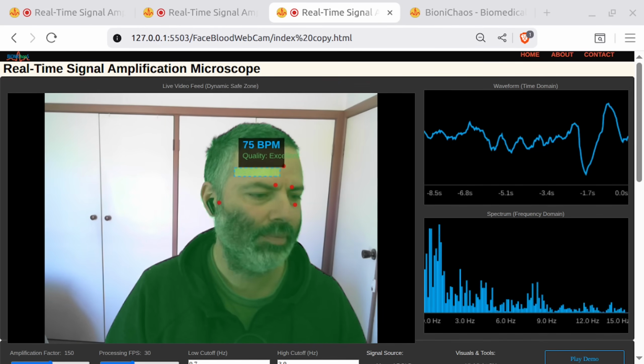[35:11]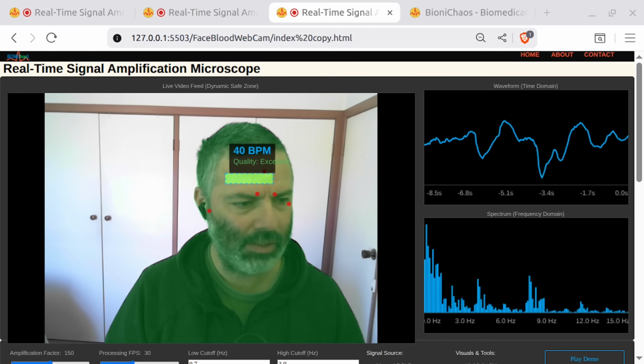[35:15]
Yeah, that one's fluctuating too much and showing you low quality even if the signal is good. So there's something wrong there. And this one's just showing you excellent all the time, which is great, which is excellent. Literally excellent. But it's not accurate, is it? And of course it says, yeah, you're absolutely right, and so on.
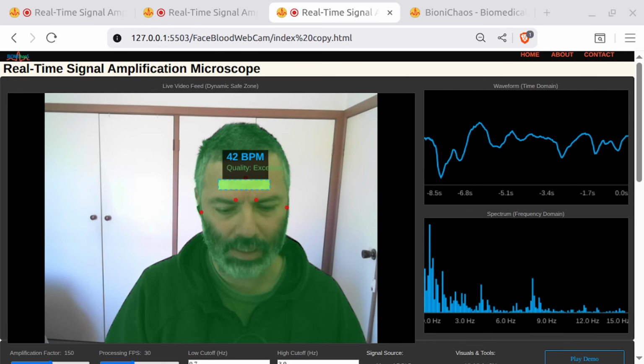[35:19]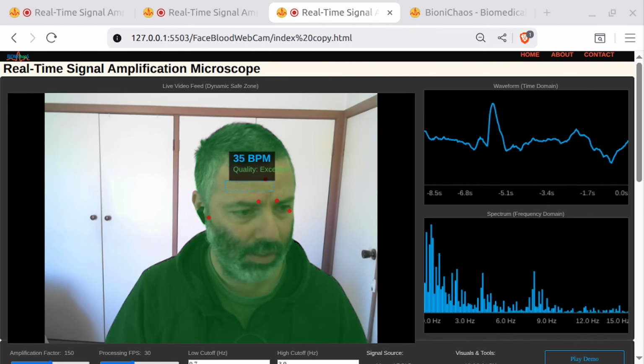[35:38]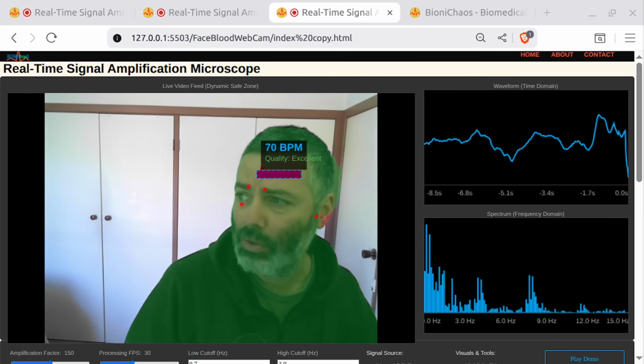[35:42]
I mean, it's still better than not having a developer at all. Like, I cannot write any code whatsoever. So people are complaining about it when they can write code, you can complain saying, I can write better code than you. But if you can't write any code, well then, this is obviously much, much better than not having a coder at all.
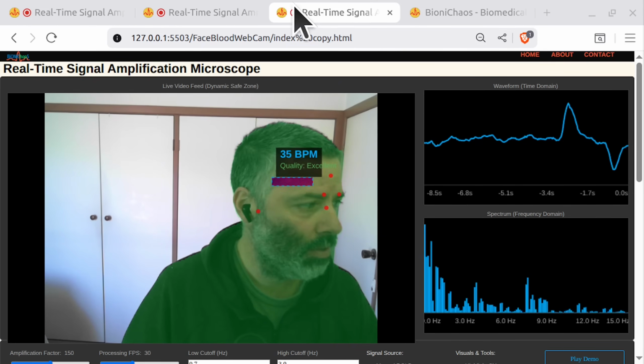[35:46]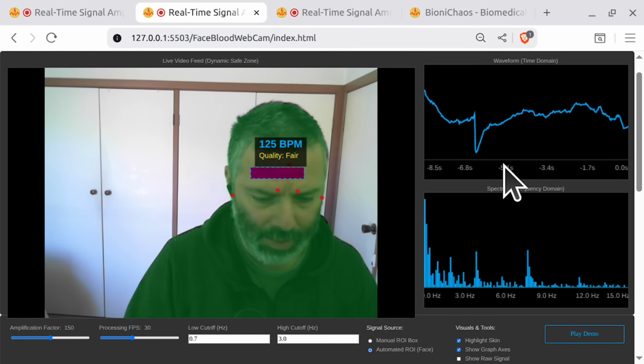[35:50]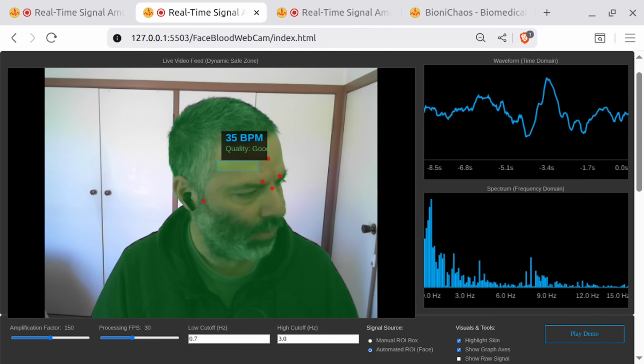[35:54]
Okay, so that's the original one. We have a better ROI. It's a region of interest, not return on investment. Even though that could be good as well.
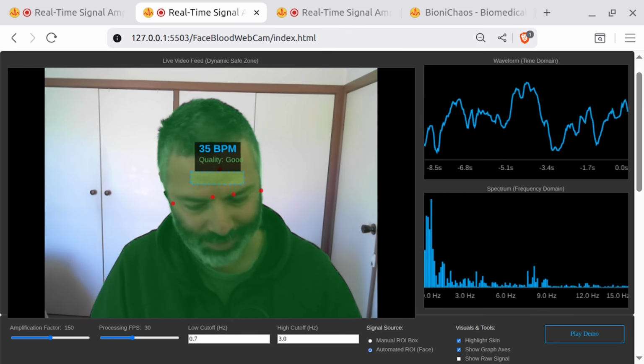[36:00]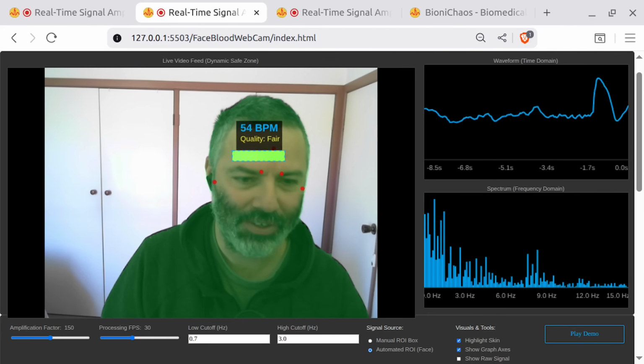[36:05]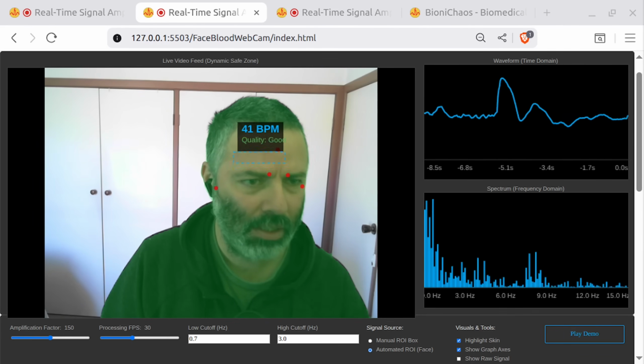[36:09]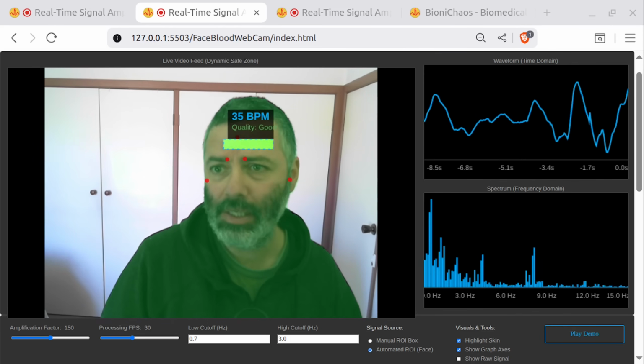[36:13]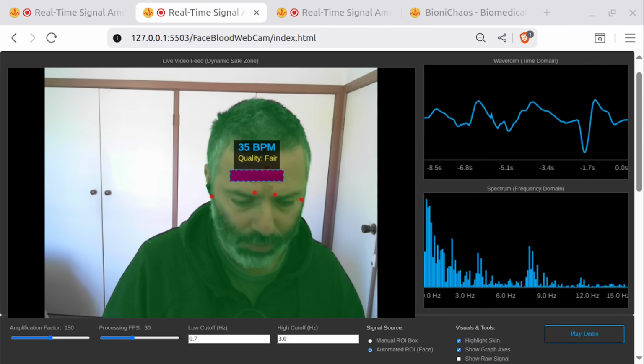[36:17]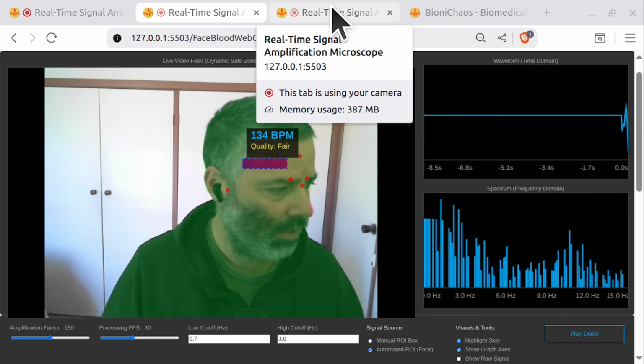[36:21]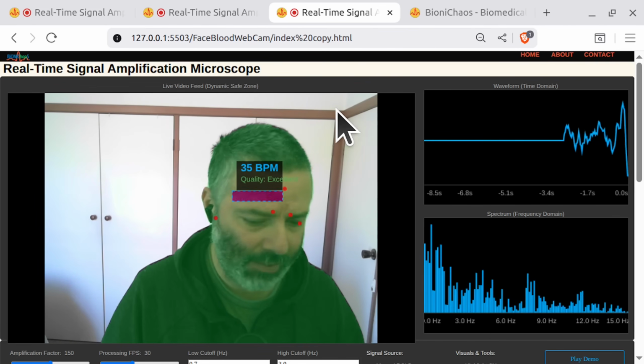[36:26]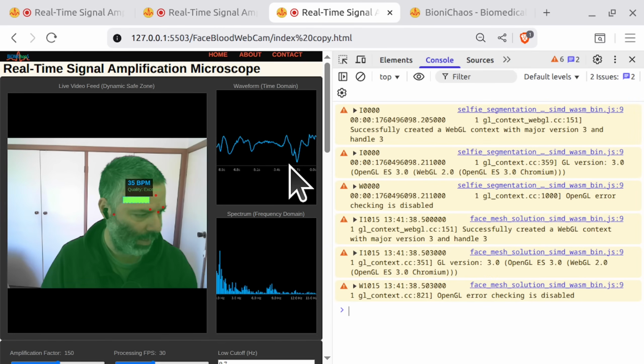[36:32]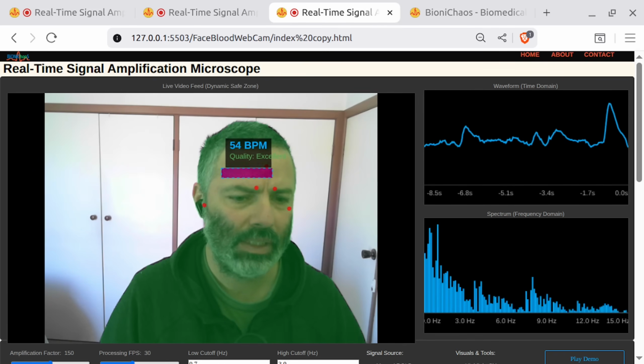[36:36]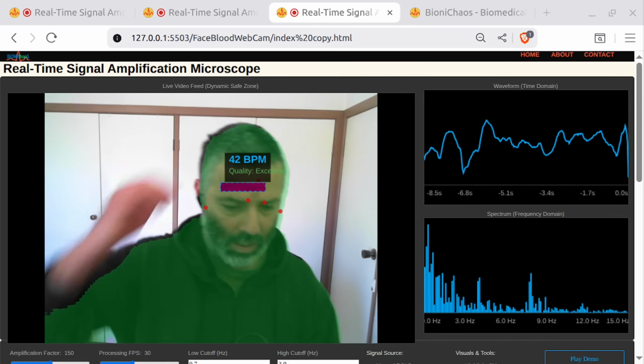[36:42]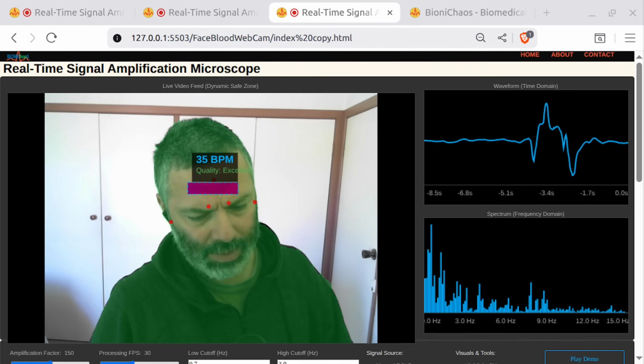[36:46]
Okay, let's see. Excellent. No, it's not excellent. Nonsense. It should not say excellent. So we turn down the temperature to 0, whatever. Let's bring it back to default, whatever that means with coding. Not sure what this temperature means with coding.
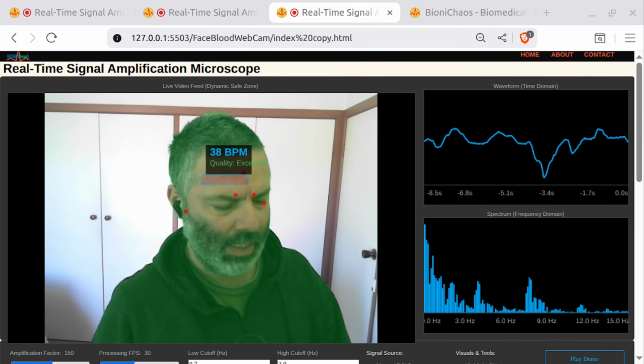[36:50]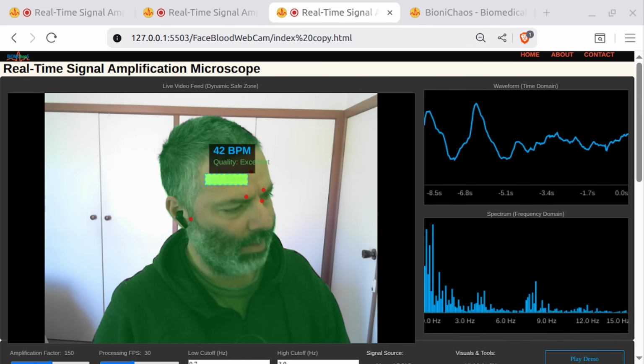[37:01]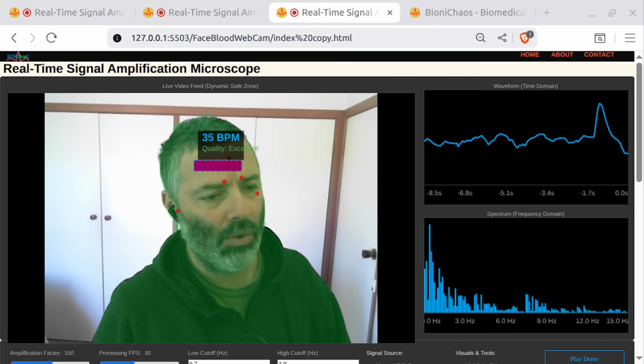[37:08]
The problem is still there. Not sure what you tried to fix before, but the quality indicator is stuck on excellent. So do we need to adjust the numbers or what? How do we adjust the numbers to make it better? Make it better.
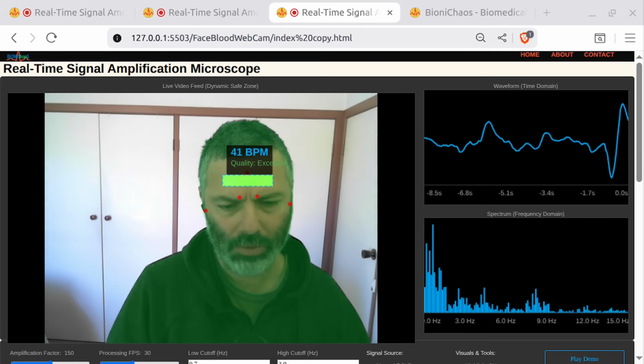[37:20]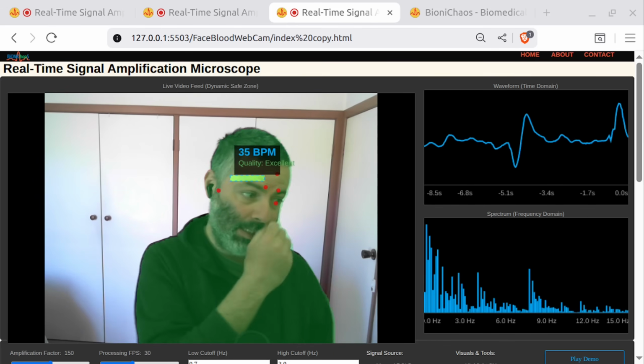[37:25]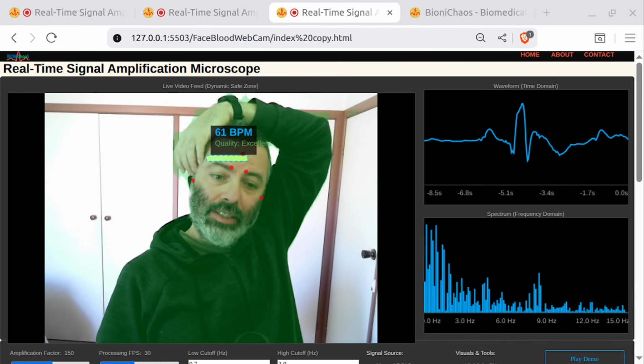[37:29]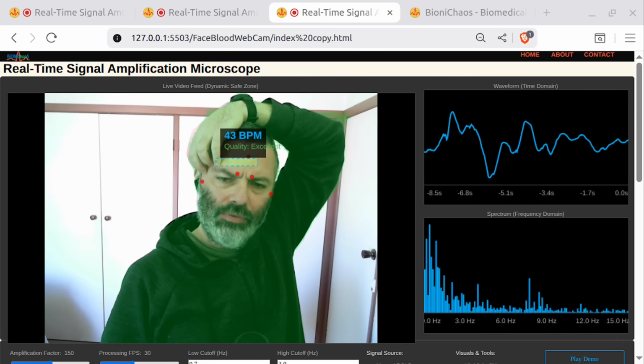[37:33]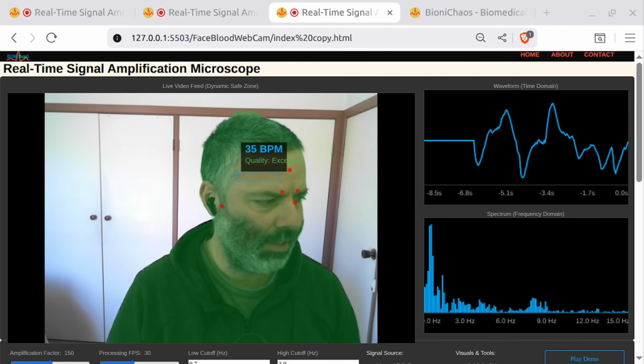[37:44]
The quality is stuck on excellent. Maybe just adjust some parameters in the code. It should be an easy fix. Is it? Okay, increase the threshold. The threshold for excellent is increased from 8 to 12. Threshold for good. Okay, so it's adjusting the thresholds. Okay, so we adjusted the thresholds.
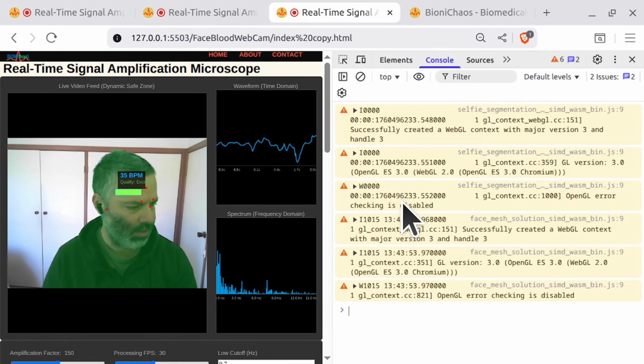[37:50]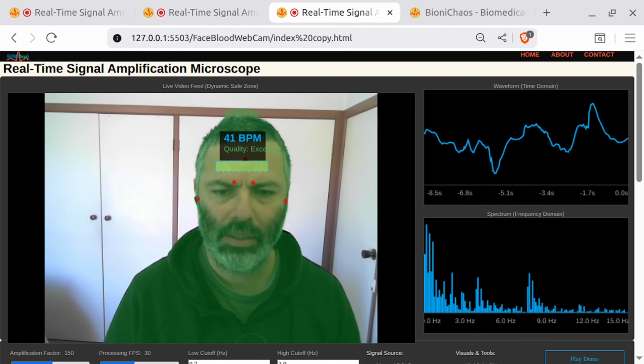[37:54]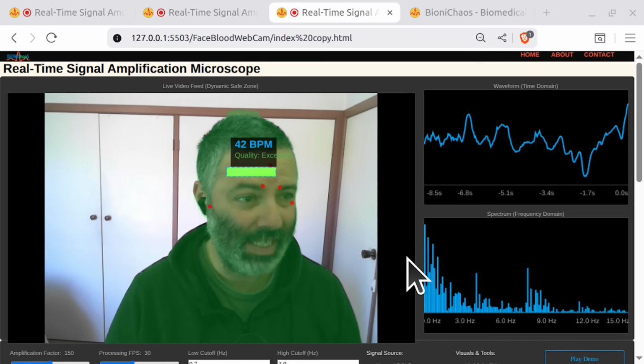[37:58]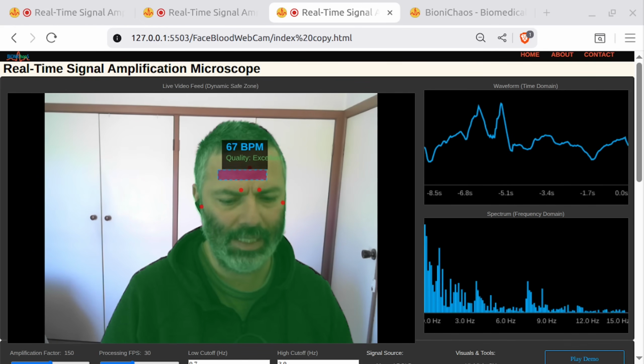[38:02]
What's the current threshold? We need that metric somewhere. We need the actual number. Can we have the number? Is that number for SNR? Is that number for signal to noise ratio? How exactly is it being measured? And can we also show it somewhere on the screen, on the web app front page?
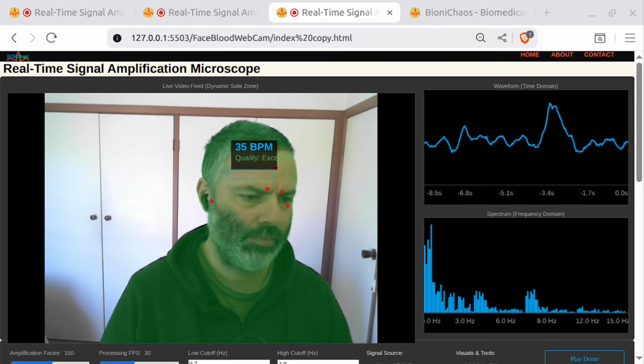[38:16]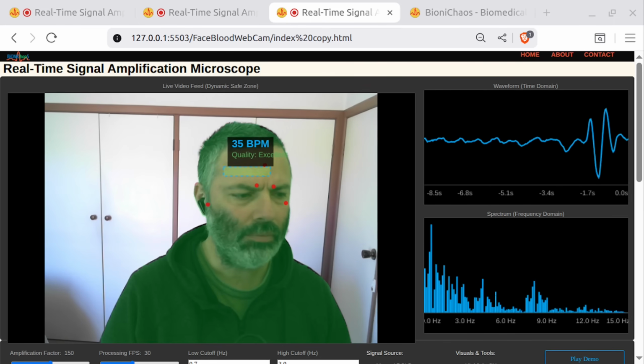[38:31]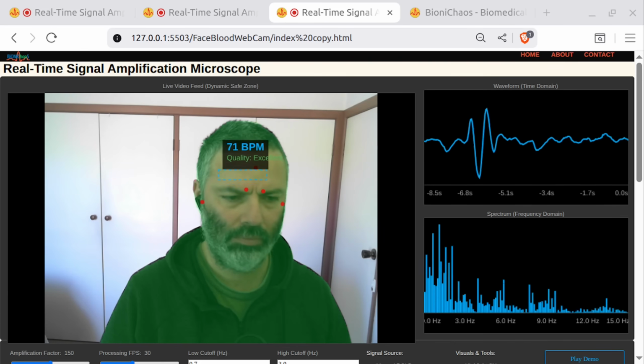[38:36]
The number used to determine the quality, e.g., current quality ratio, is indeed a signal-to-noise ratio, SNR. It is calculated as the ratio of the peak magnitude, signal, to the average noise magnitude in the frequency domain. Here's how it works. Signal, the peak magnitude in the frequency range of interest, e.g., 0.7 Hz to 3.0 Hz. Noise, the average magnitude of all other frequencies in the same range, excluding the peak. To display this SNR value on the web app's front page, we can add a new section to the overlay where the BPM and quality are displayed.
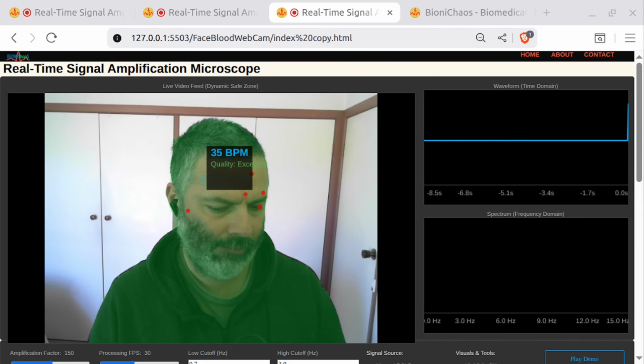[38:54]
Broke something. GPT-4o broke the code. We don't like it. Gemini it is.
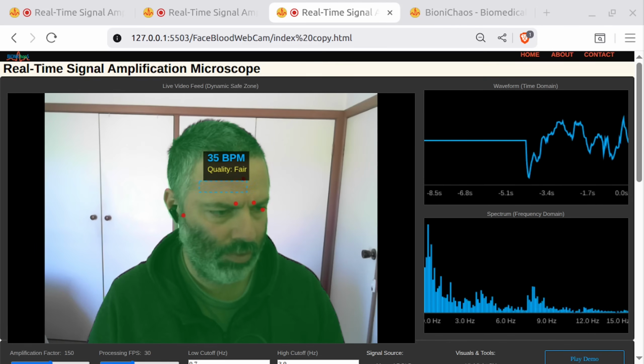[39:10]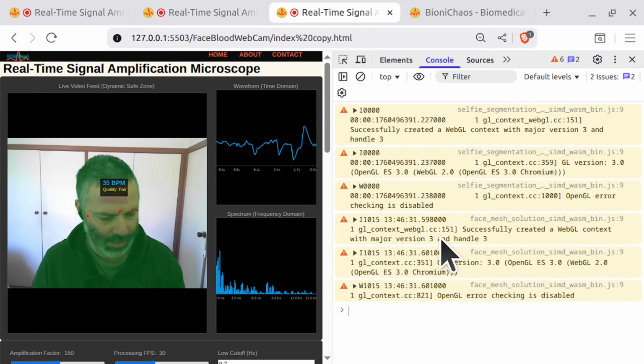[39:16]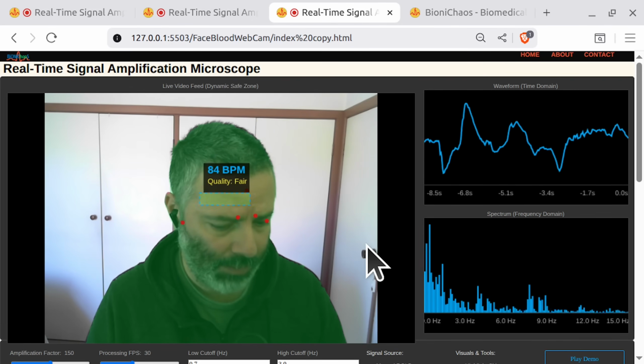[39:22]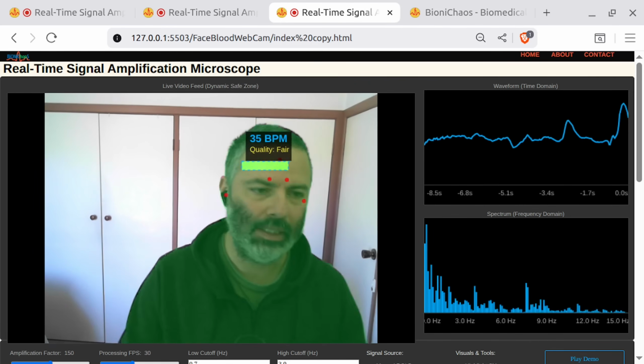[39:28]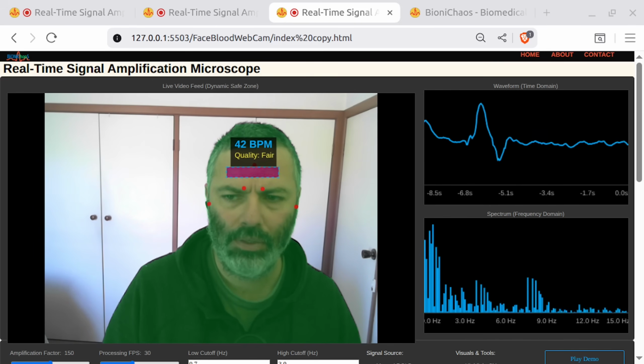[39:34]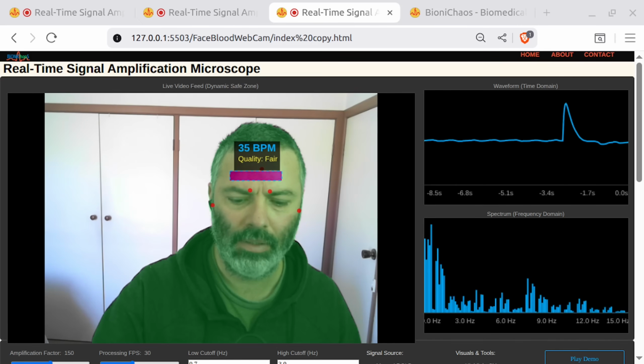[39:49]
Can we have this SNR value somewhere? Should we have it in the console or somewhere on the page? Somewhere on the page. Is it working? The main question. Let's see, if we're not moving, we should be getting a high quality signal. Should go to like good or something. Good. How about more light? Can we get a good signal with more light?
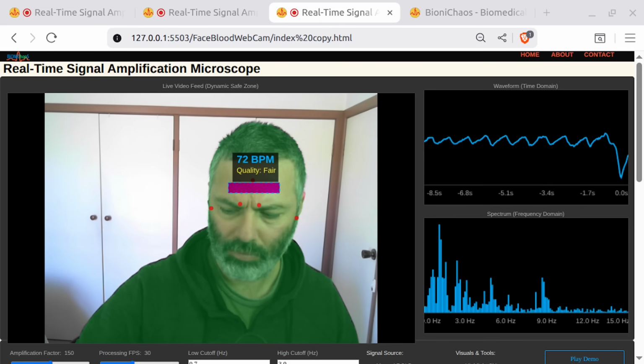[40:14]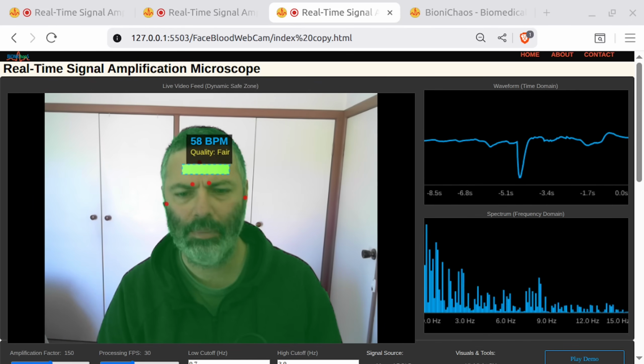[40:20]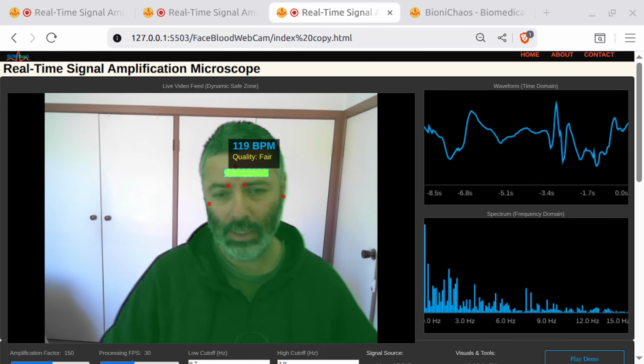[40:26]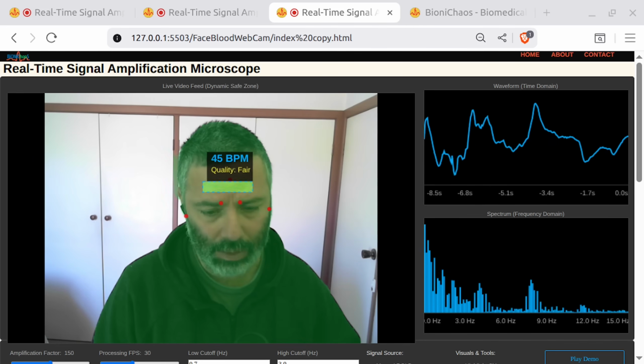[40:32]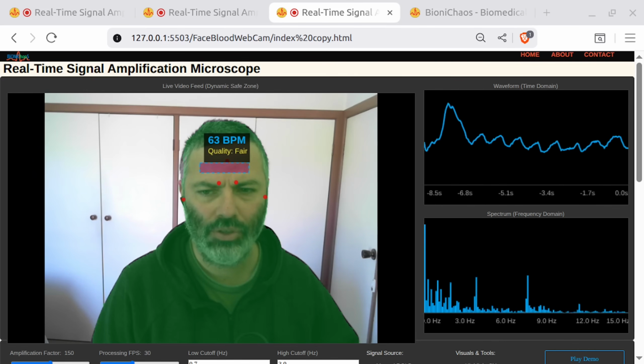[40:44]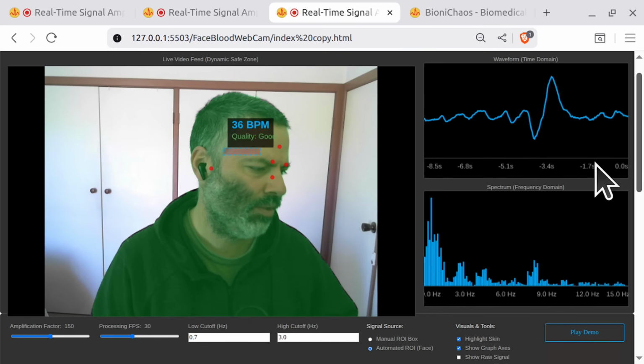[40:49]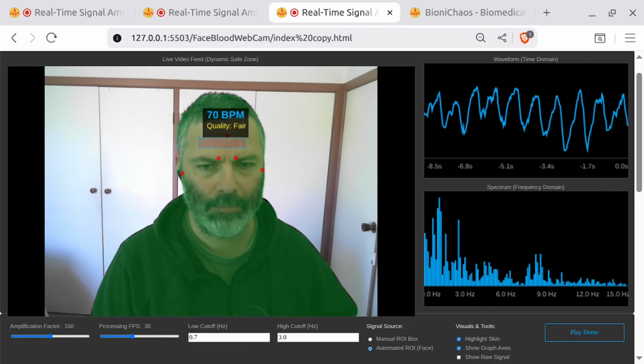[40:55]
I think it's working better. So supposedly in some sort of lab conditions where you totally control the light and everything, you could get a much better signal quality, but it should be, oh come on, really? Should be the ratio of 0.7 to 3 versus everything else. Okay, we can be spending endless amount of time on this.
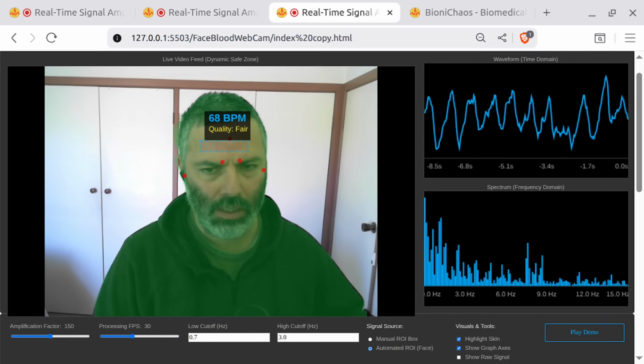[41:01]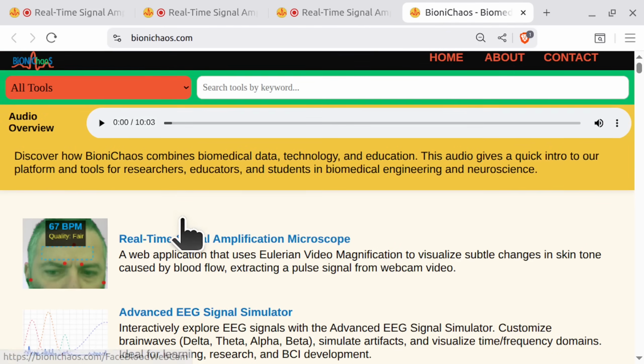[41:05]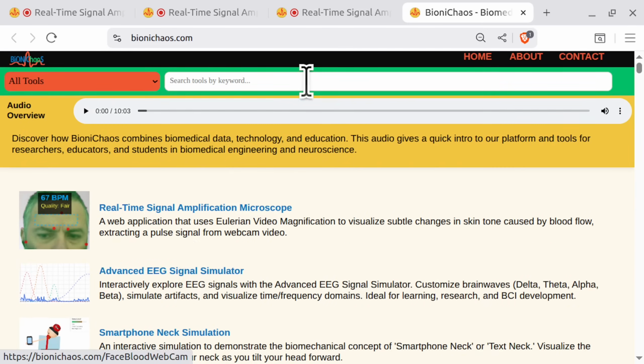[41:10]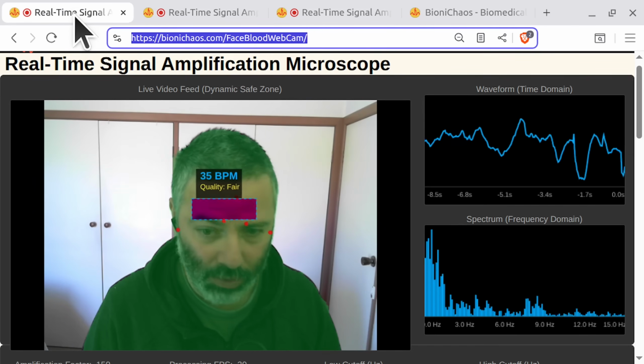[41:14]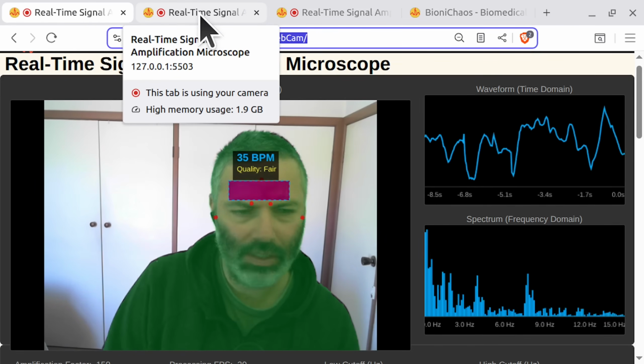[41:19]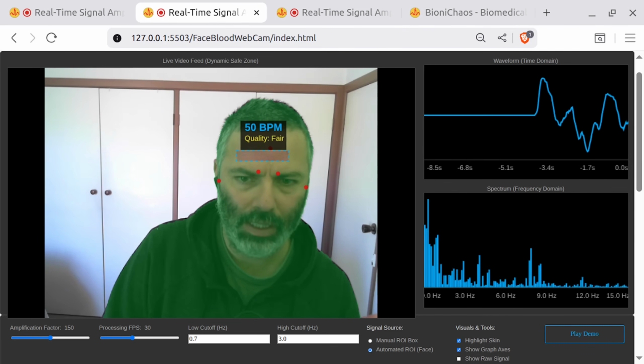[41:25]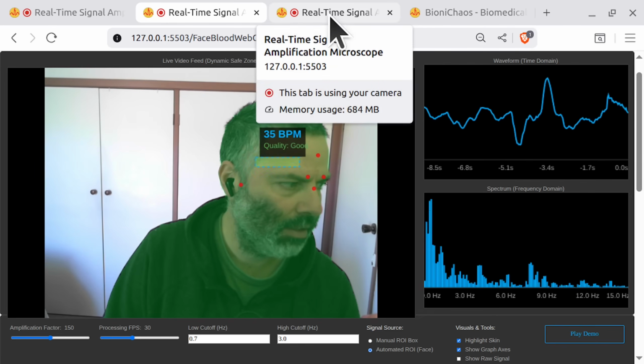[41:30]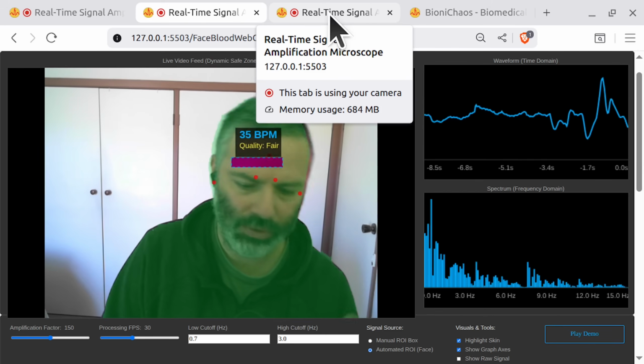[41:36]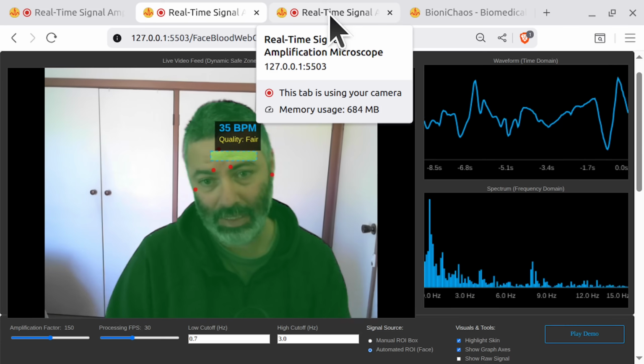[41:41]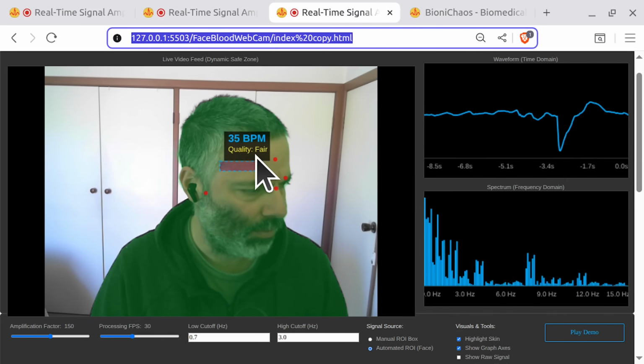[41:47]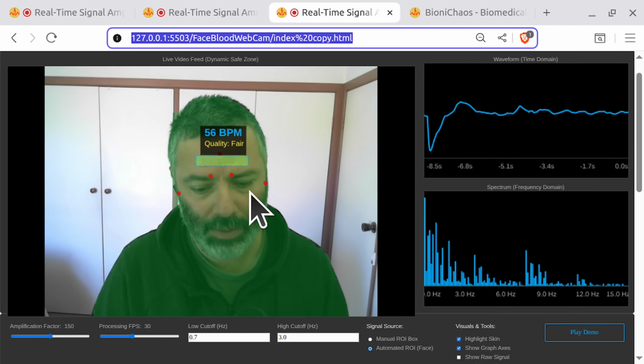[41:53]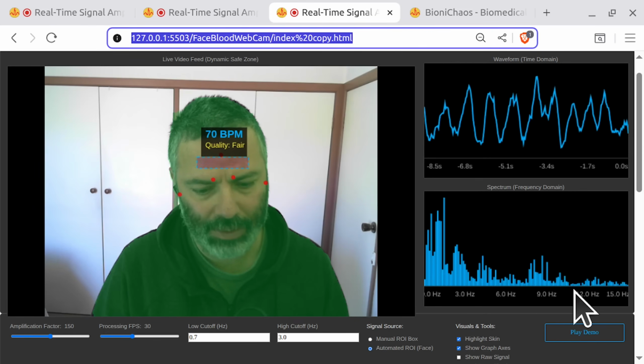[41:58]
This is what we have in production. So we supposedly improved the ROI box, so it's not overlapping the eyebrows. And yeah, you need to face the camera. It could also adjust depending on your head orientation, but that will be hard, so we're not going to do it. Anyway, this one also should show a better signal quality. Maybe. It's working okay. So I might leave it as is.
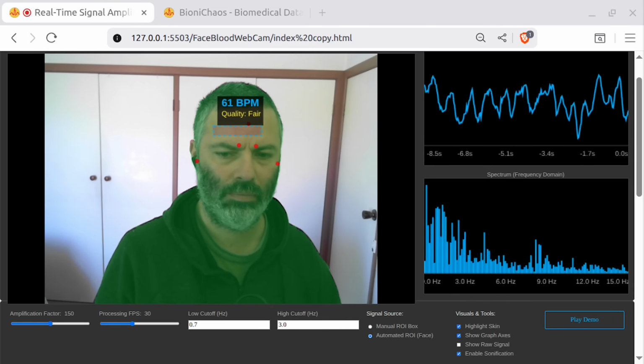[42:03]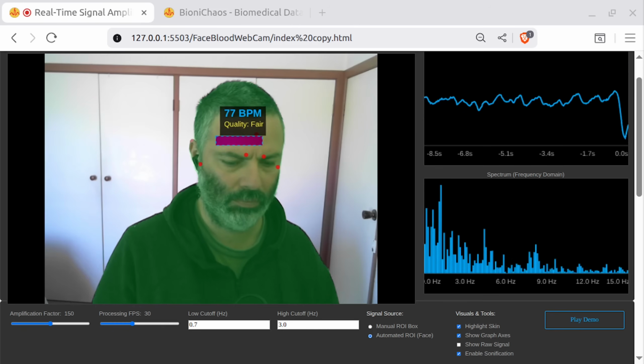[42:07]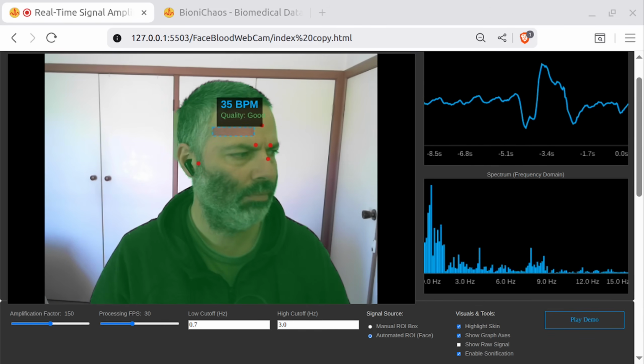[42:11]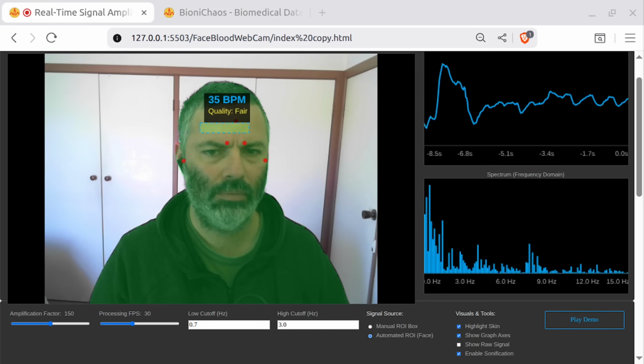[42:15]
Yojik, my friend, you look perplexed. Did my signal amplification microscope finally show you the secrets of the universe in your forehead? Not quite. Misha, your app's quality indicator has the emotional stability of a squirrel on 3 espressos. It flashes between poor, fair, and good so fast, I think it's trying to send me Morse code.
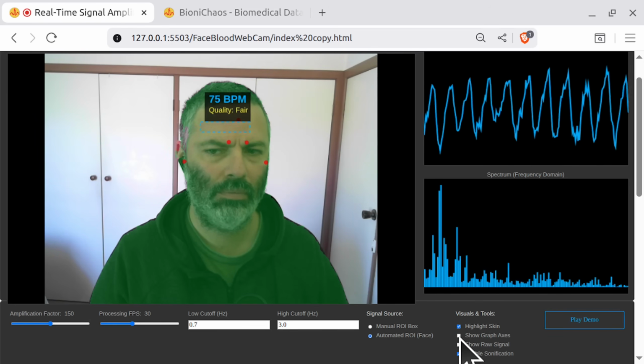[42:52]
Ah, you're referring to the stochastic volatility of the signal quality metric. Yes, I saw that. It's because the calculation was instantaneous. Every single frame, it was re-evaluating the entire universe from scratch. It was less re-evaluating the universe and more like a stock market ticker for my face. My BPM would be a steady 70, the waveform looked like a beautiful mountain range, but the quality meter was screaming, Mayday, sell, no, buy, panic. A fair, if dramatic, assessment.
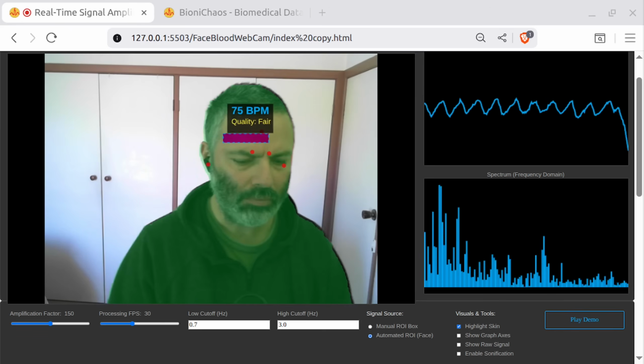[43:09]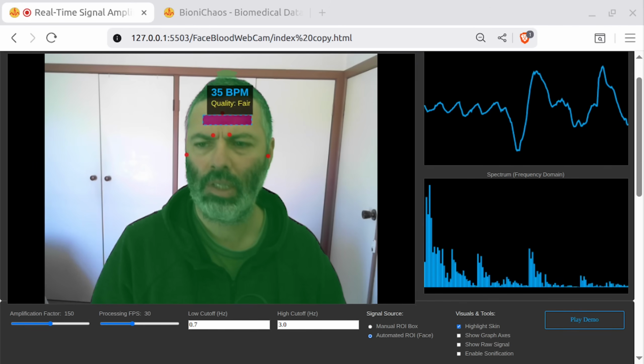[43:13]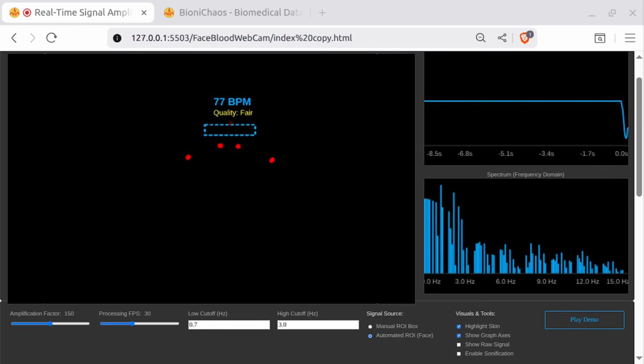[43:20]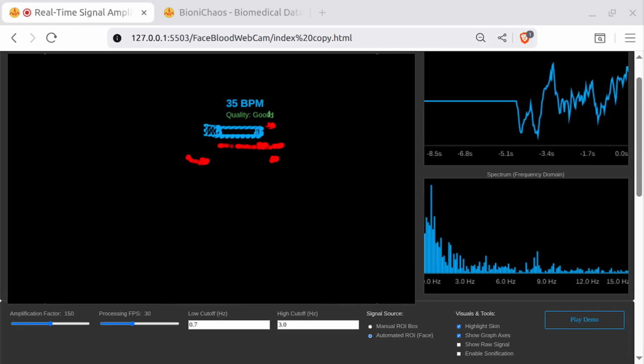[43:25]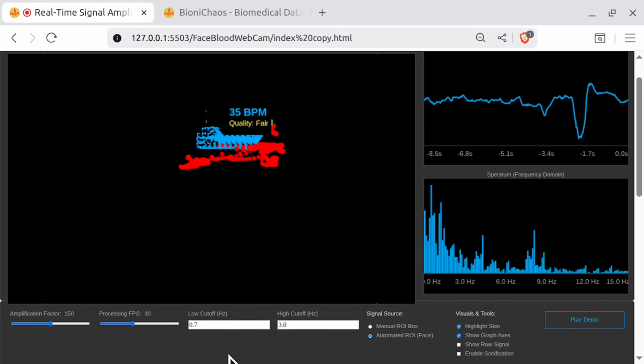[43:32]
My first instinct was temporal smoothing. I applied an exponential moving average to calm the ratio down. The idea was to make it consider its past decisions, to give it some memory and stability. Right, but you over-tuned it. Now it's stuck on excellent like a guru who's had too much chamomile tea. I could be juggling chainsaws and it would be like, signal quality, superb. Inner peace, achieved. I waved my hand in front of the camera and the BPM vanished, but the quality stayed excellent. It became a pathological optimist.
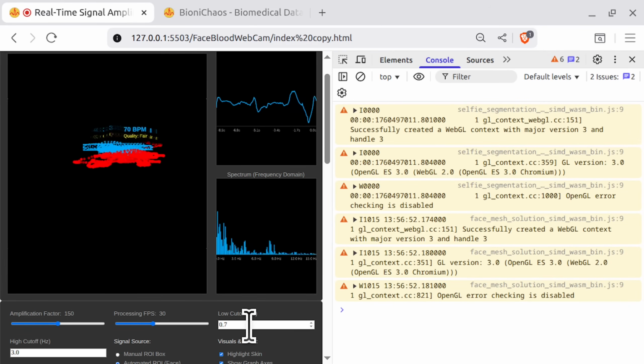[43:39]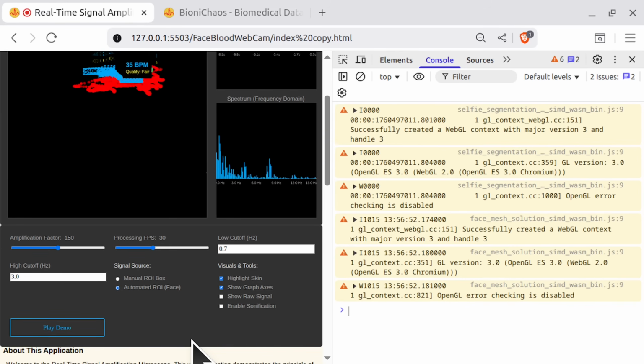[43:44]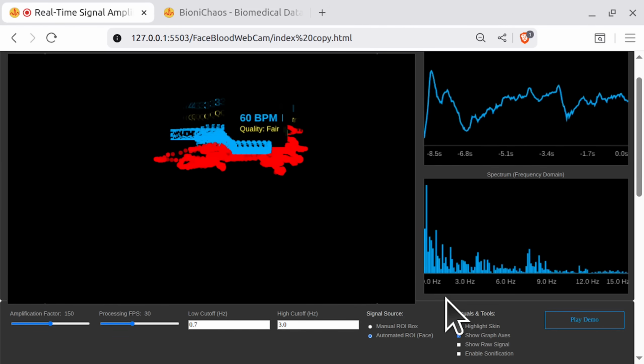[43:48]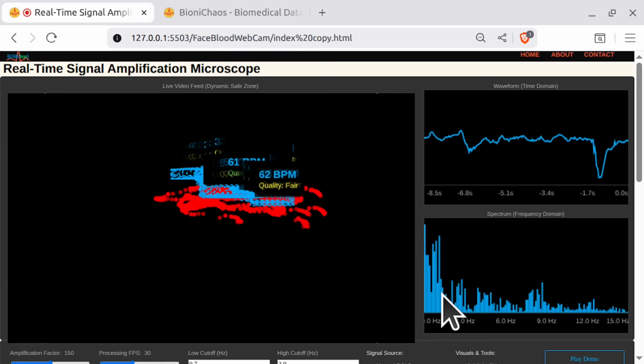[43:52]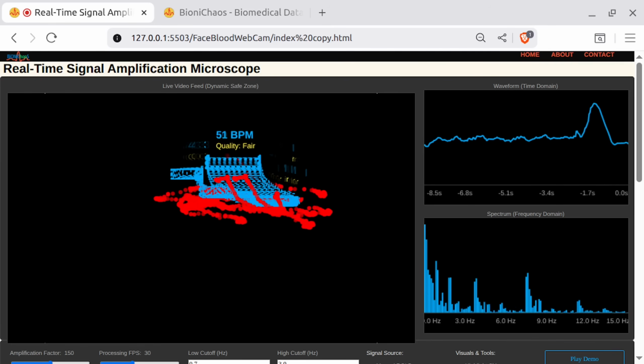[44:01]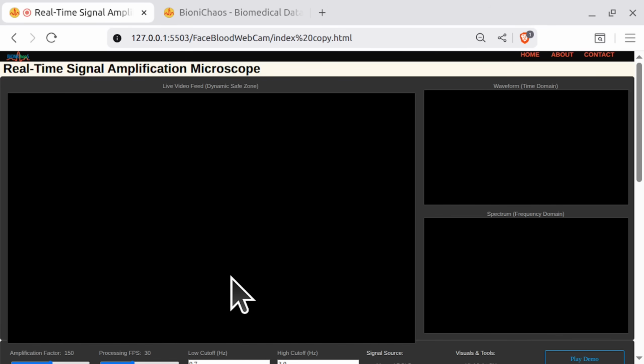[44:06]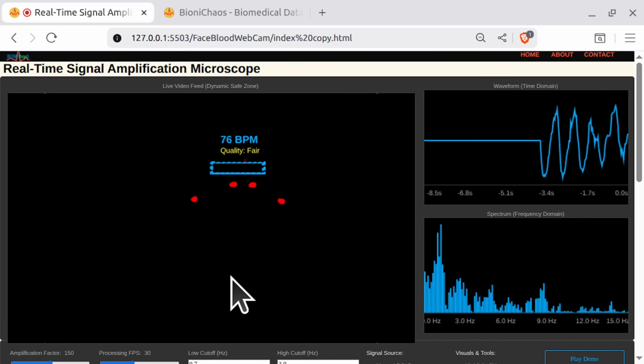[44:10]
That's a surprisingly accurate way to put it. The smoothing factor was too strong, and the initialization was flawed. It got one good, clean look at the signal and latched onto that excellent rating with the tenacity of a barnacle. So it's like it got one good review on Yelp, and now it thinks it's a Michelin star restaurant forever. But that's not even the real problem, is it? Even when it was fixed to be less clingy, why did it think the signal was so great in the first place, even when it was just noise?
Now you've hit the core of the problem. The metric was purely relative. It was looking for the tallest peak in the frequency graph compared to the average height of its neighbors. Okay, translate from data scientist to human being.
Imagine you're trying to find the loudest person in the room. In a library, even the person who whispers slightly louder than everyone else is technically the loudest. The metric would call them excellent because relative to the dead silence, they're a standout signal. But they're still just whispering.
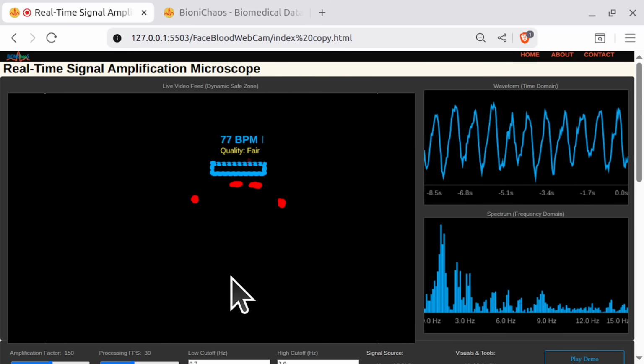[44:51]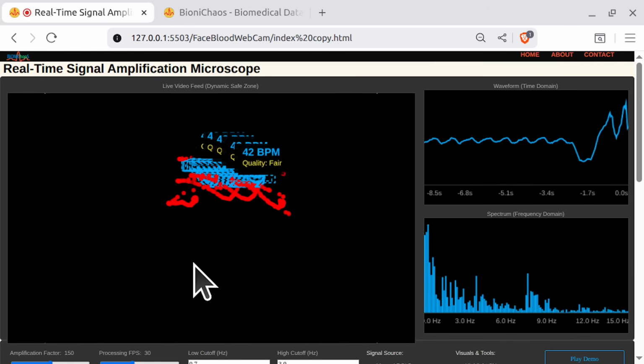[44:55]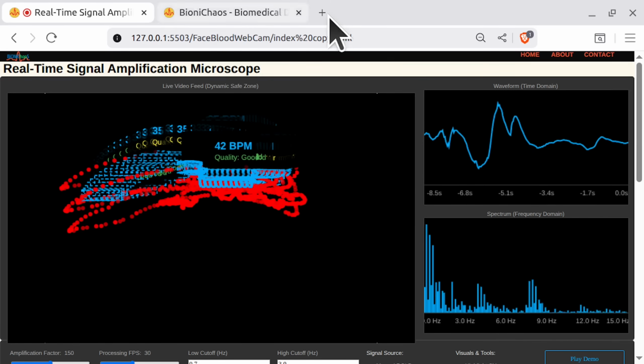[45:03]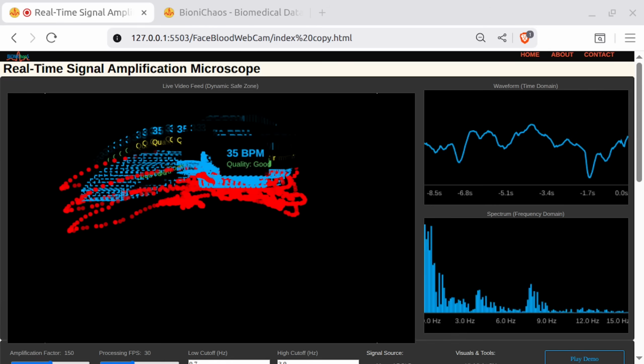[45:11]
Exactly. Now, take that same logic to a rock concert. Finding the loudest person there is meaningful. My algorithm was treating a library like a rock concert. It saw a tiny, clean-looking peak in a sea of near-zero noise and declared it a triumphant, excellent signal. It had no sense of scale, no absolute measure of whether anyone was actually making any real noise at all.
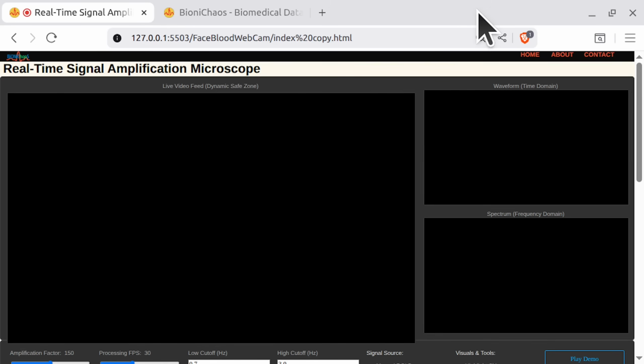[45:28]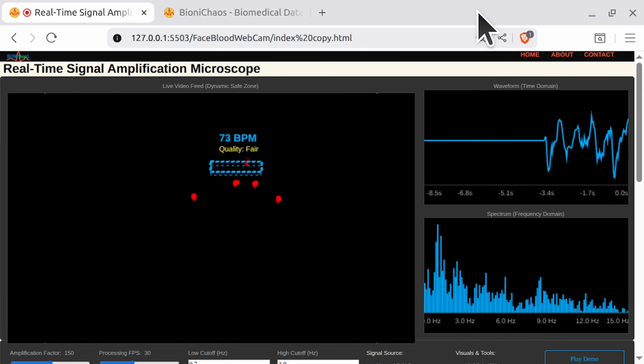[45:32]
So we needed a bouncer. A bouncer? Yeah, someone at the door of the club to check an ID. The bouncer doesn't care if you're the best dressed person in a group of clowns. His first question is, are you even old enough to be here? Is the signal even strong enough to be considered? That's precisely the fix.
I implemented a signal power gate. I calculate the root mean square, the overall energy of the filtered signal in the time domain. The bouncer is muscle. Yes. Now, the logic is twofold. First, the bouncer checks the signal's power. If it's below our minimum threshold, if the signal is just a faint whisper, it's immediately thrown out. Poor quality, no exceptions. Sorry, kid, you're not getting in.
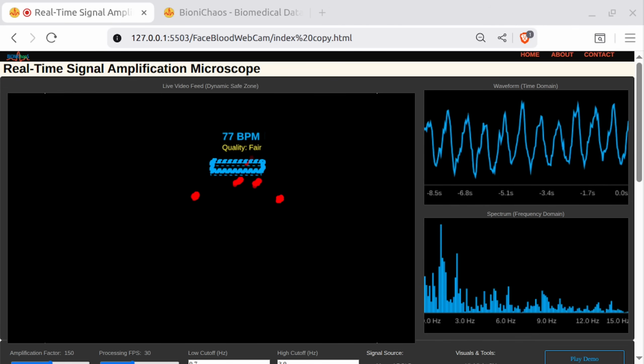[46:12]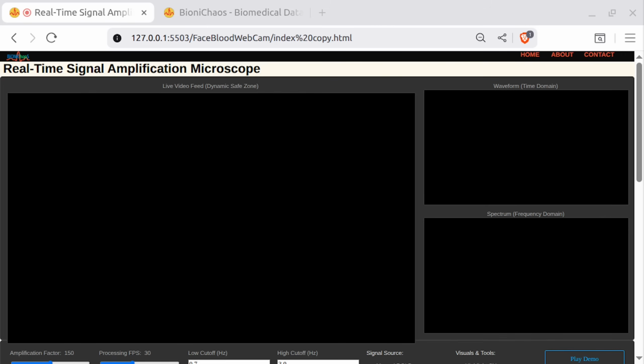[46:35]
Only if it passes the power check, only if it's loud enough to be at the rock concert, do we then let the other logic analyze how clean it is. We check if it's the standout peak. So the signal now has to be both strong and clean to earn a good or excellent rating. So it's less squirrel on espresso and more bored security guard who's seen it all? Precisely. It has to earn its confidence now.
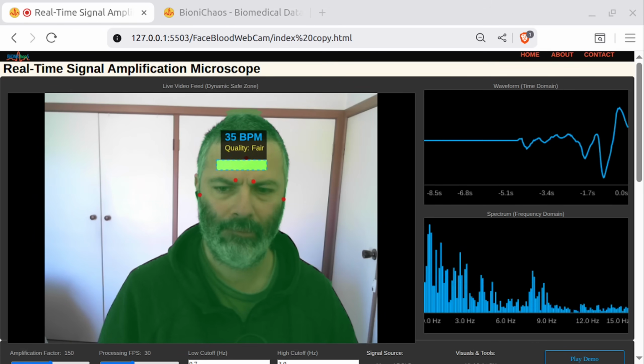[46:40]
Good. My face can finally relax. It was a lot of pressure being excellent all the time.
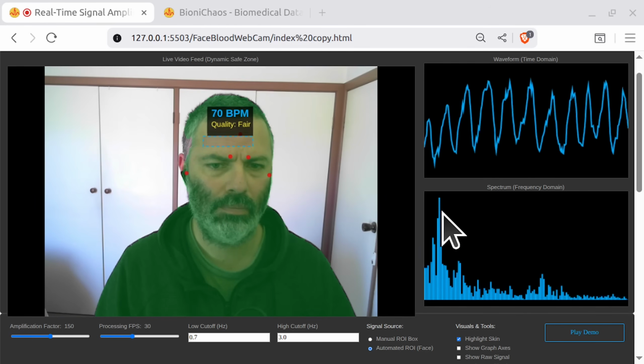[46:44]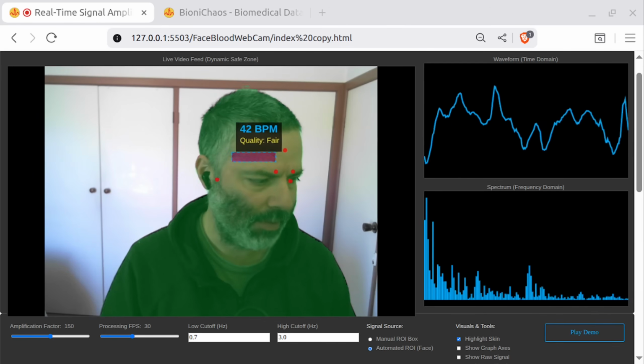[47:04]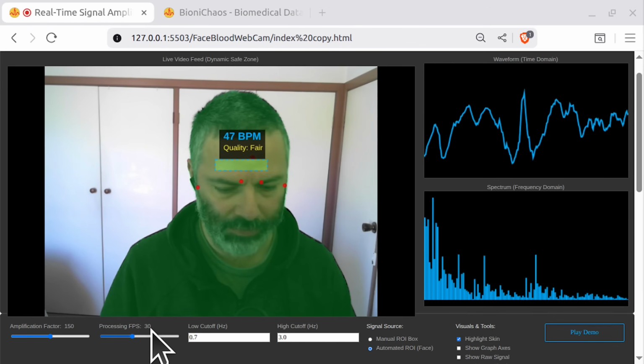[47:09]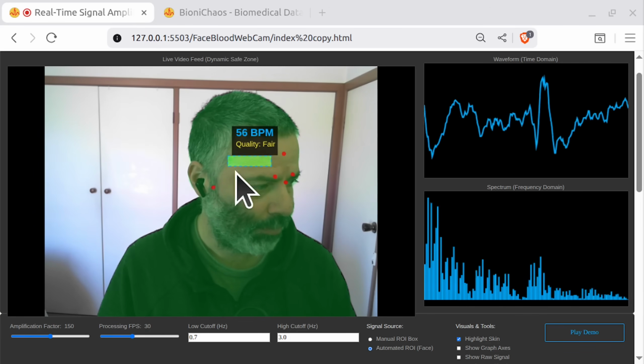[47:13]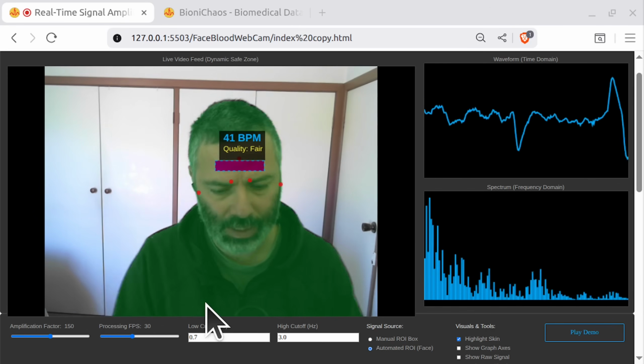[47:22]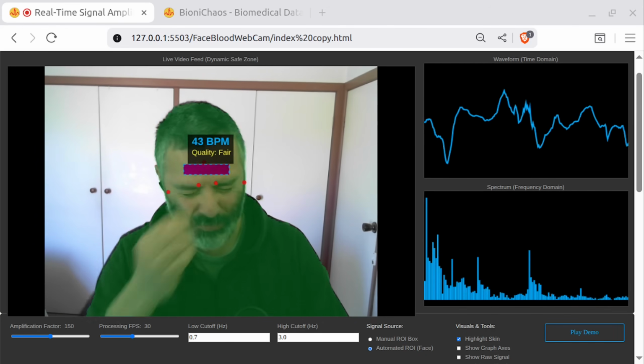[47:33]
Okay, there's another problem. When we change the FPS, the default frames per second is set to 30, and it shows a correct beats per minute, but when we increase the FPS to 60, as shown in the image attached, then the BPM measurement is incorrect. Can you fix the code? Okay, so this will be the third major change to this.
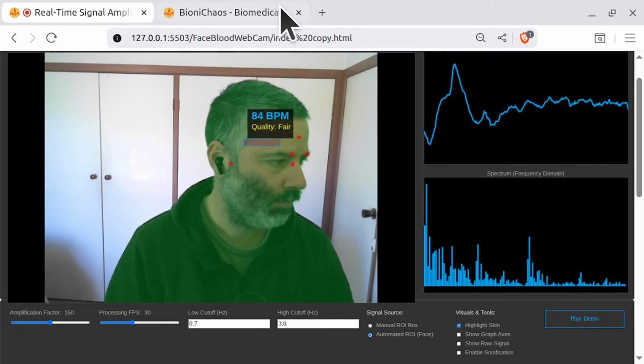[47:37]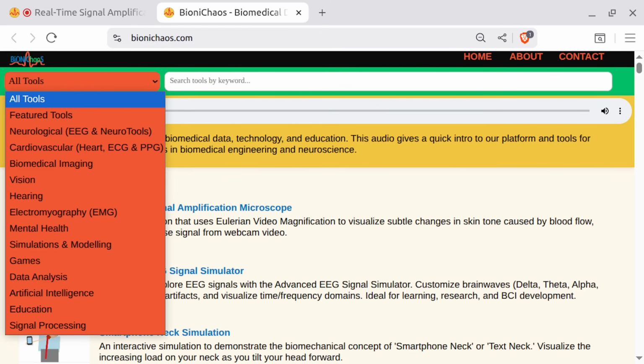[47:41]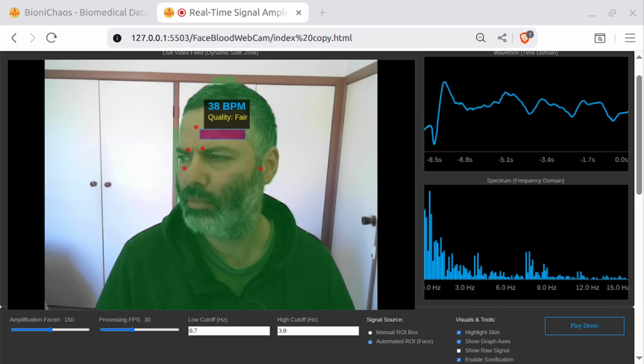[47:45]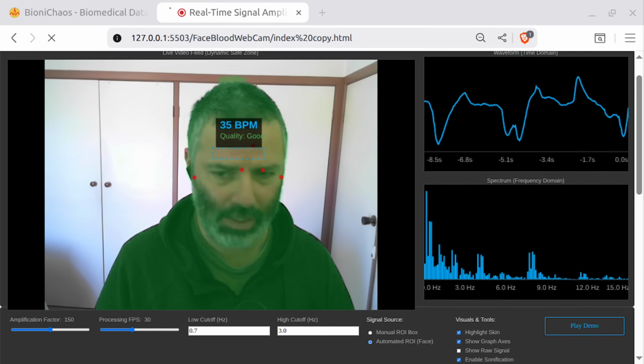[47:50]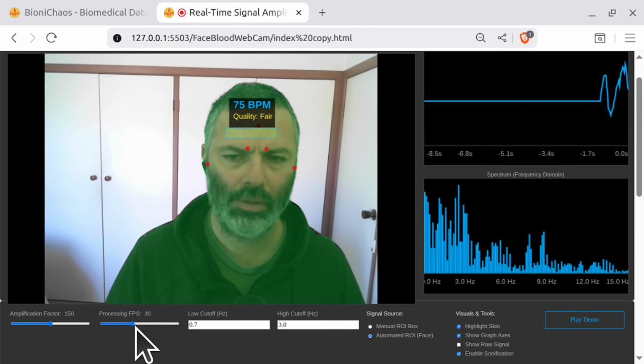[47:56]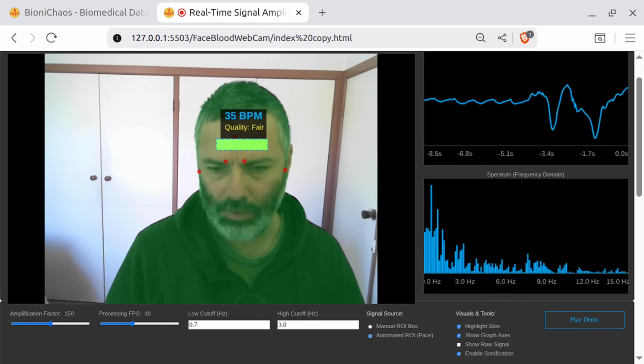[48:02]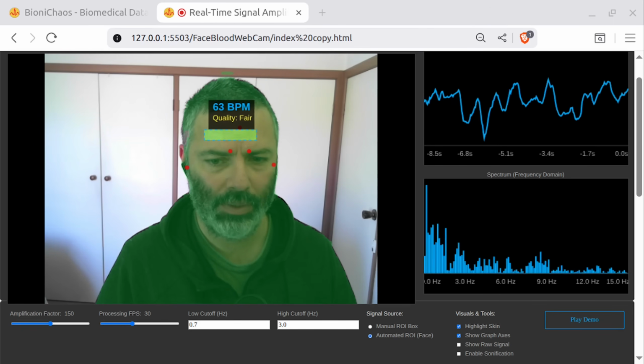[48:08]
Anyhow, we have another version that should fix that FPS calculation. It didn't seem to work, because again, if we change the FPS from the default 30 to 60, the BPM still seems off. Well, not doubling, it's just not calculated correctly anymore.
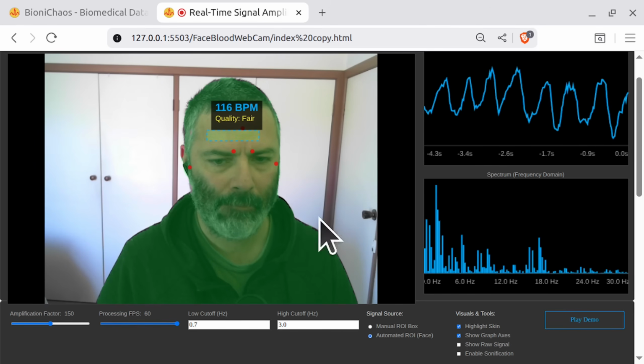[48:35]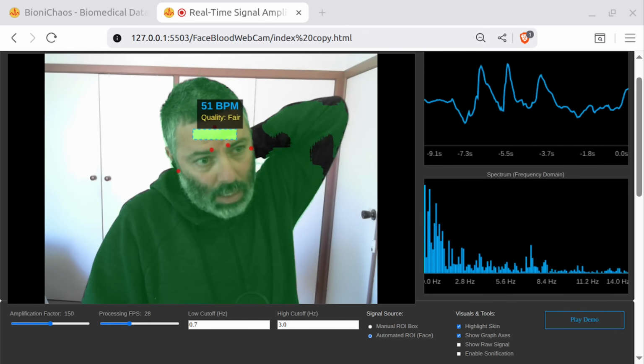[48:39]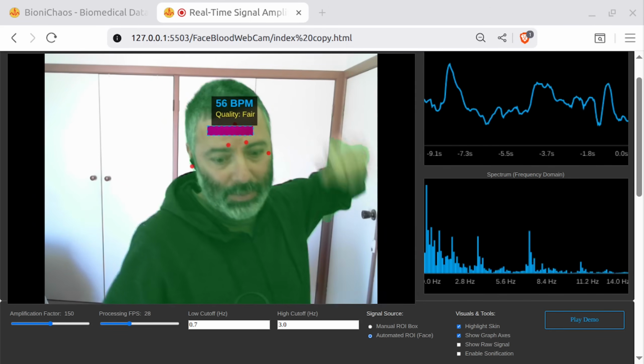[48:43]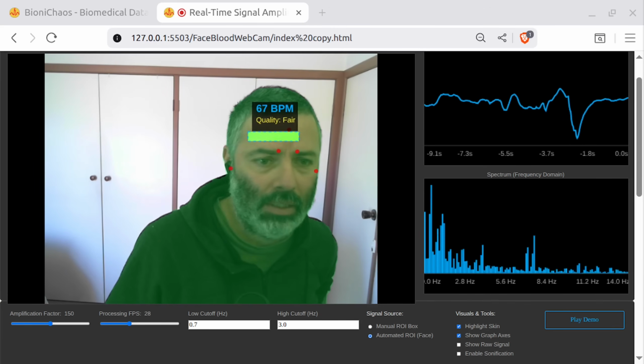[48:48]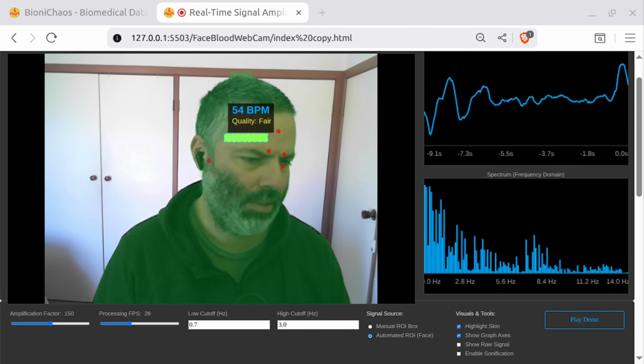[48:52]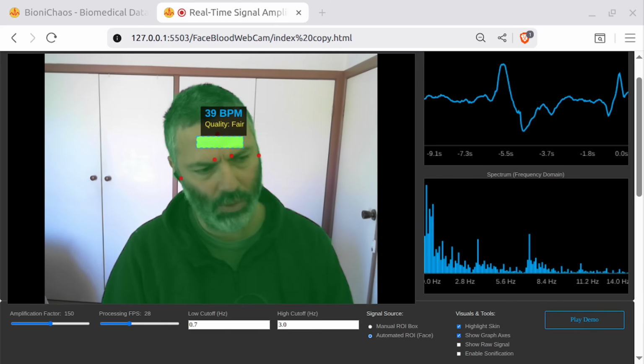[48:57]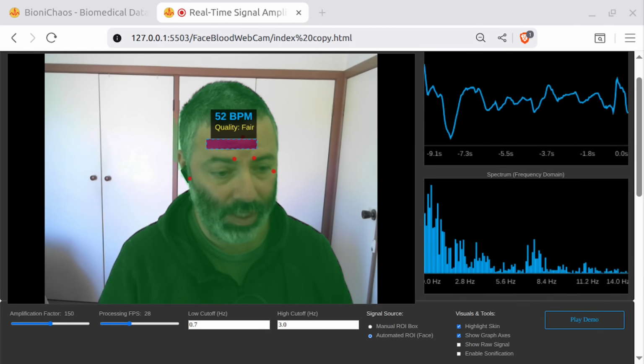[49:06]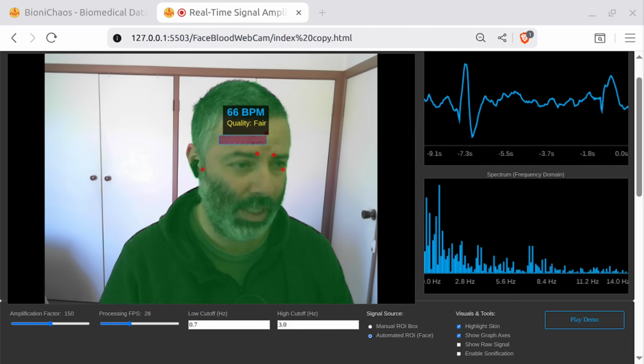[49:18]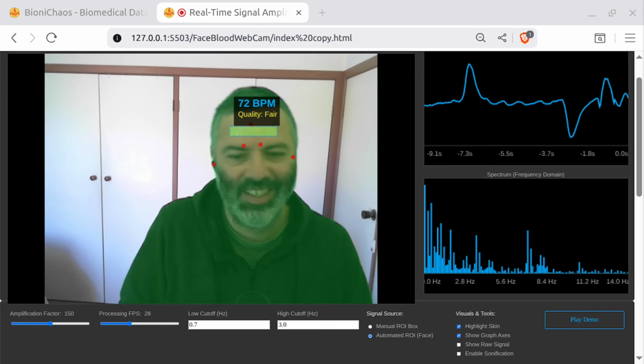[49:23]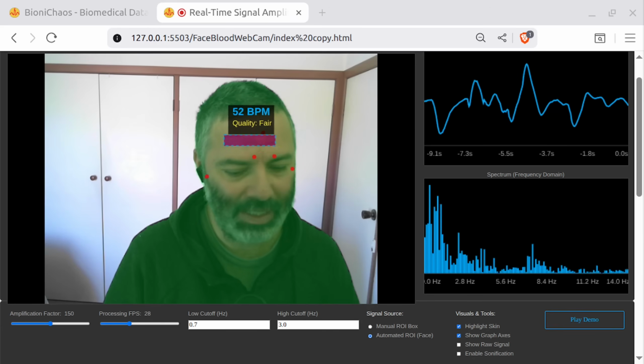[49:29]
Something to do with the bandpass filter not being properly reconfigured when processing the FPS slider change. The filter designed for a 30 Hz signal will produce incorrect results. It seems to know what it's talking about. The event listener has been correctly implemented. Okay, rendering bug fixed. Some typo. Where did the typo come from? I didn't write any of the code. The quality metric, a robust signal power gate, logic remains in place.
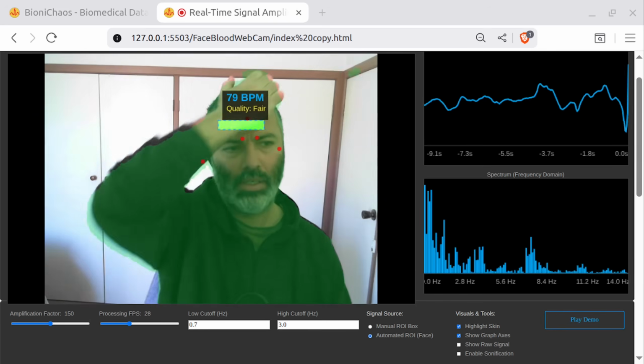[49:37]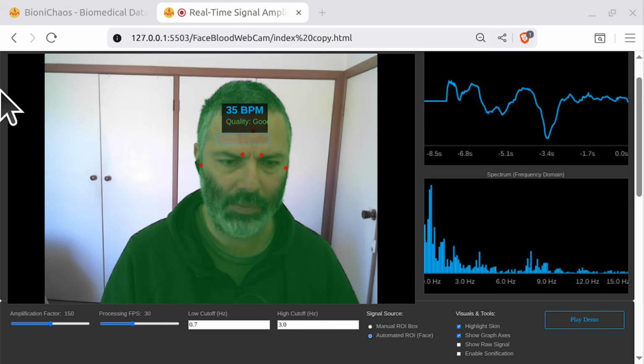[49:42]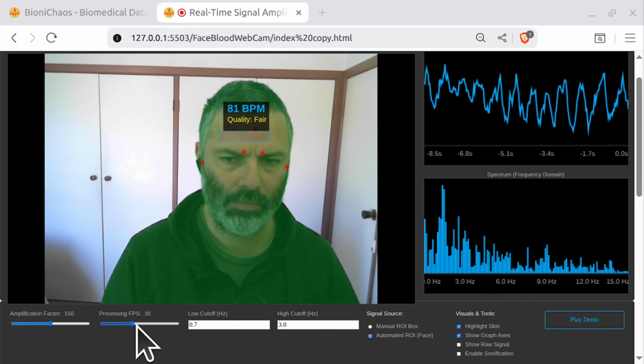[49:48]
Okay. And this is one of those things that we'll be testing forever, aren't we? Okay, so we have a signal. Yes, 70, 71. Close enough. Oh, that's incorrect. That's me moving too much.
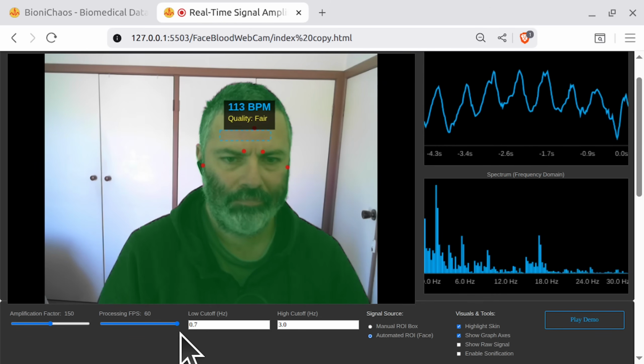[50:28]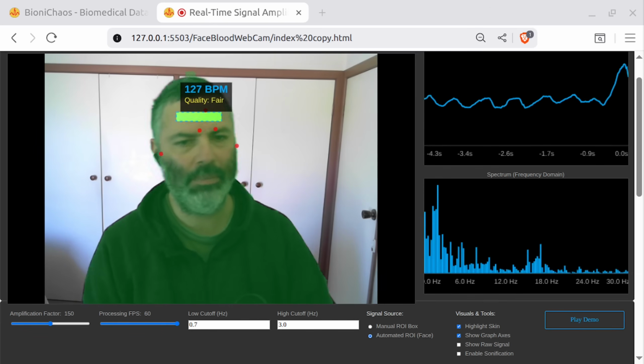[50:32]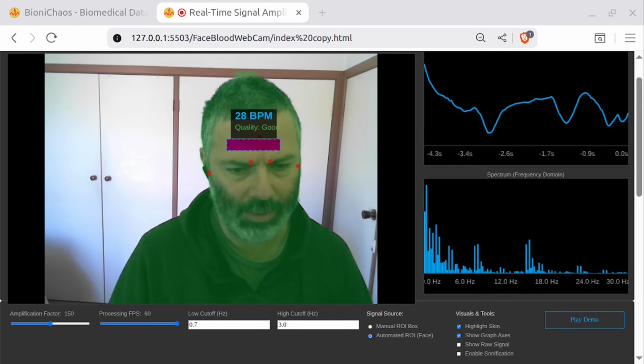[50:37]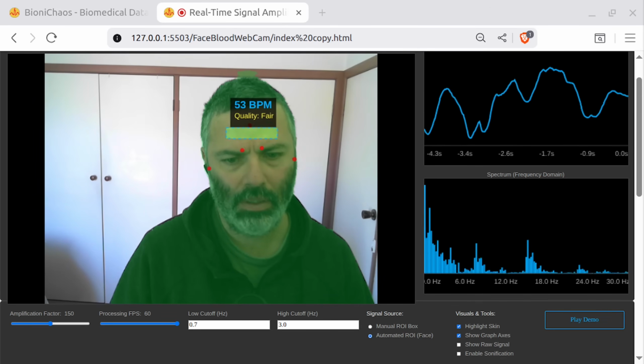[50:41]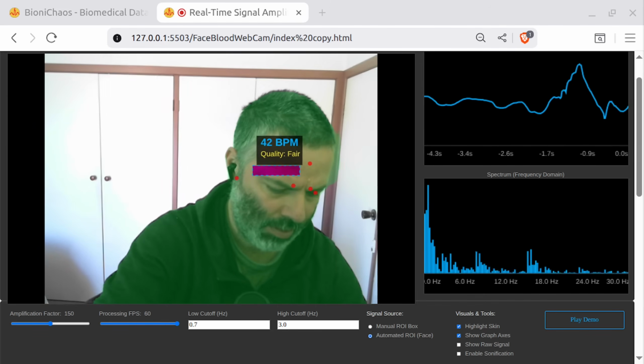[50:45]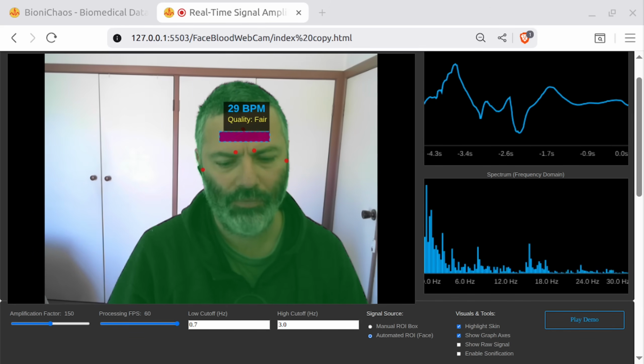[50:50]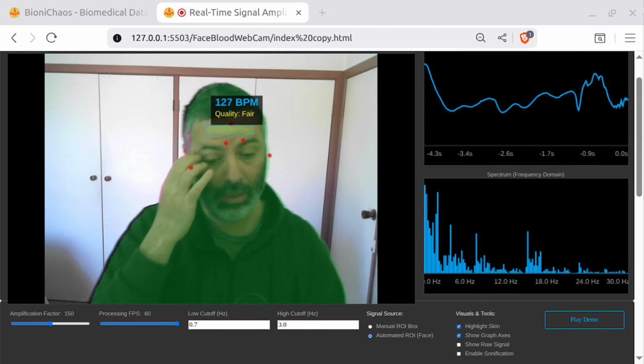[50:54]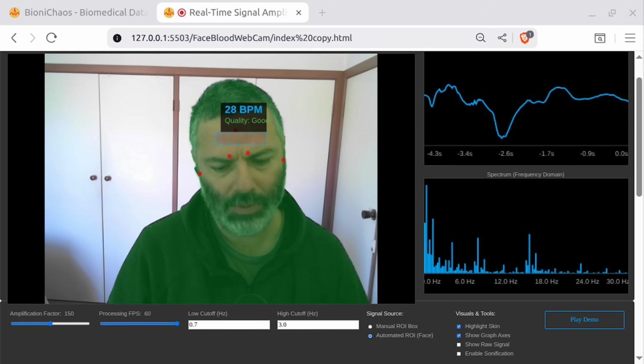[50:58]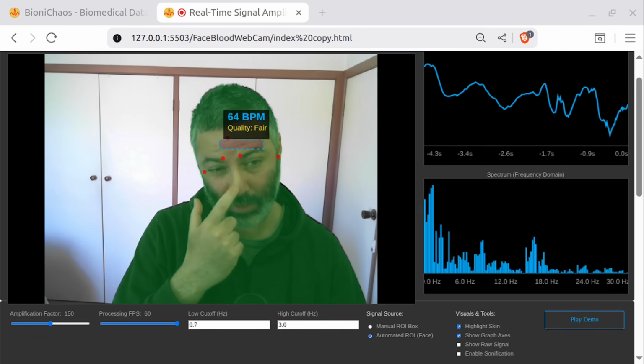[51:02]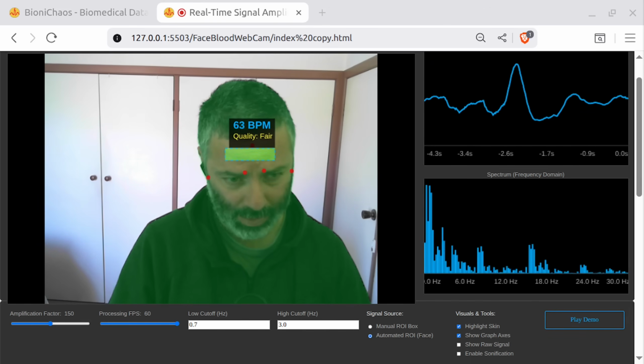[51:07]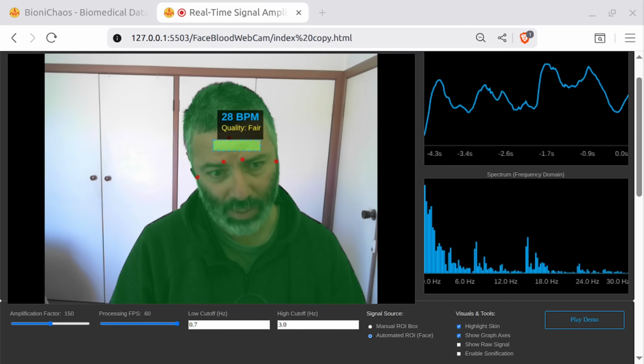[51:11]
Cannot fix the issue. That BPM is obviously wrong. The issue seems to be still there. So for 70 BPM, which is the actual value, at 30 frames per second, I do get the correct value, 70 BPM. But then when I increase the frames per second from 30 to 60, I get about 112 BPM, which is incorrect. Can you explain, without modifying the code, just explain what might be the issue?
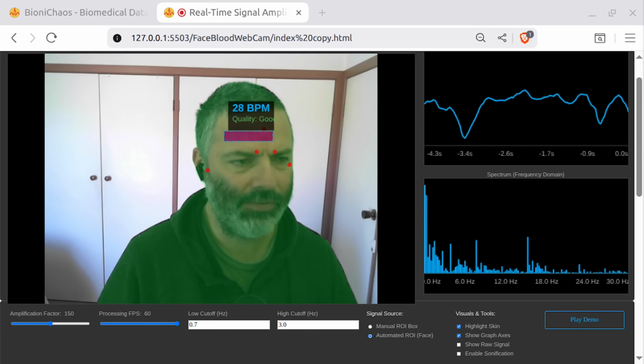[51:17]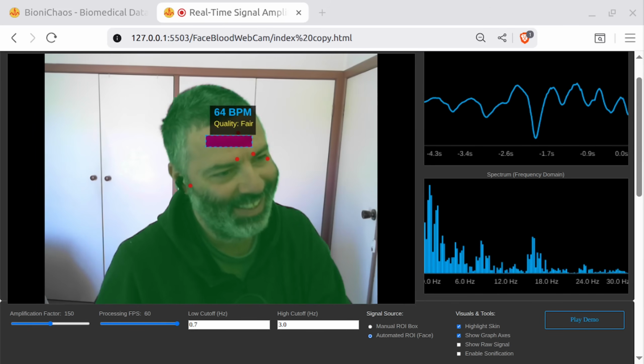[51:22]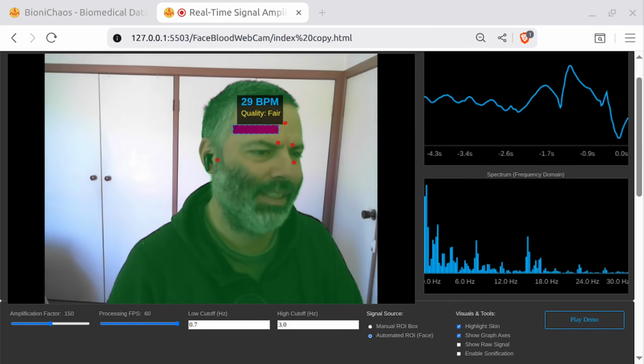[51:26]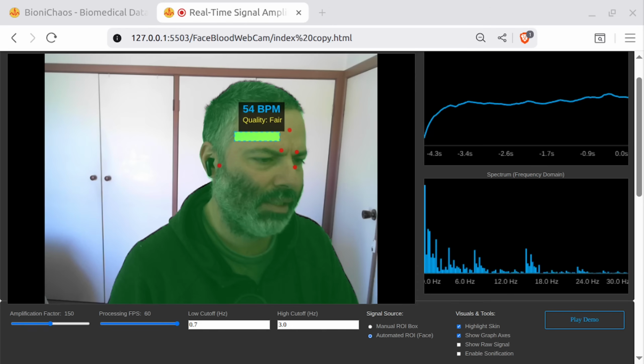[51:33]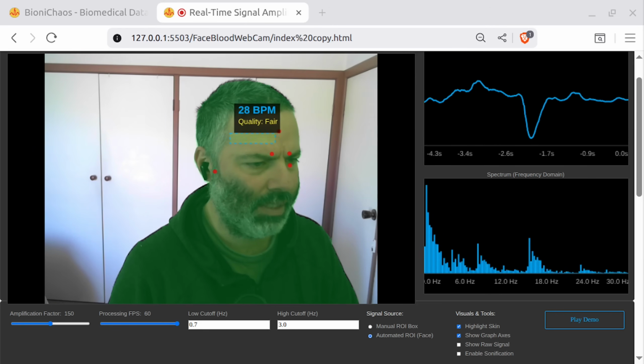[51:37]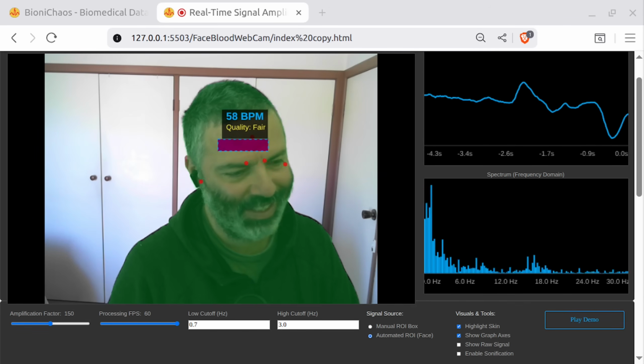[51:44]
This is a classic and very frustrating behavior in digital signal processing. The issue persists. Here's the breakdown of what's happened. Filter type, cascaded first order. Why the error occurs when changing FPS. Okay, distortion of filter shape, the primary issue. The harmonic peak becomes dominant.
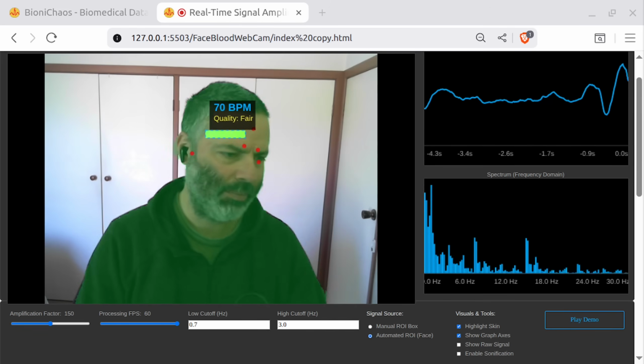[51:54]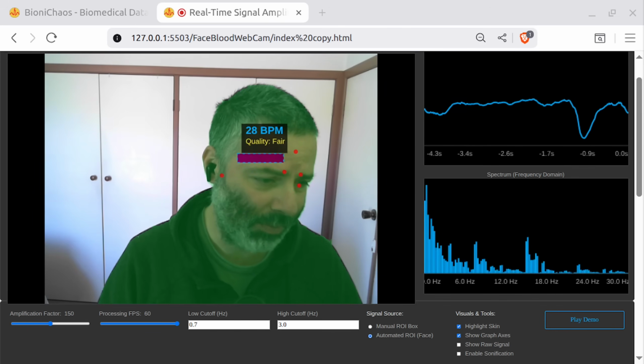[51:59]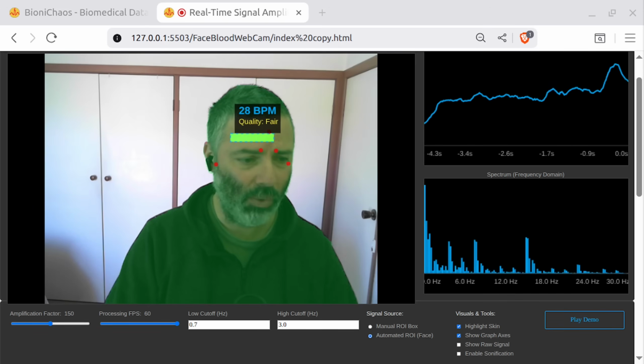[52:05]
Okay. So it's a filtering problem, is it? The filter approximation is breaking down when the sampling rate changes, causing the effect of the bandpass window to shift and compute a harmonic or a noise component instead of the true heart rate.
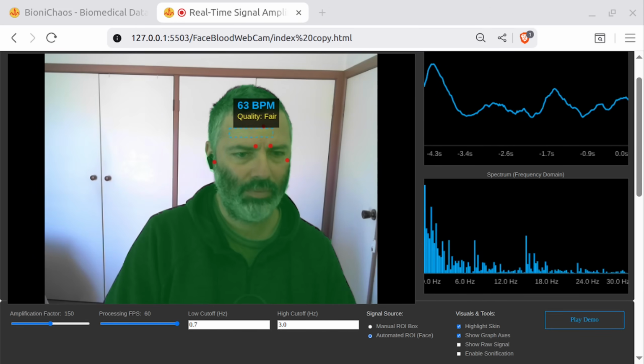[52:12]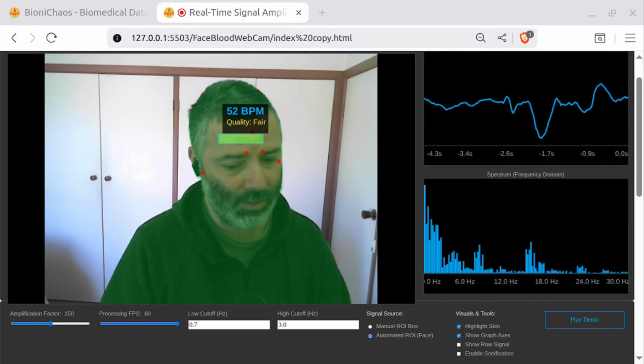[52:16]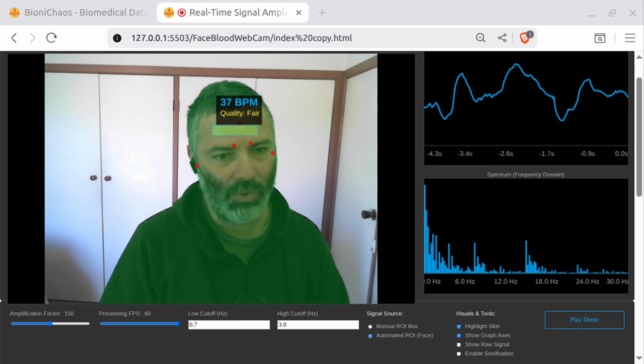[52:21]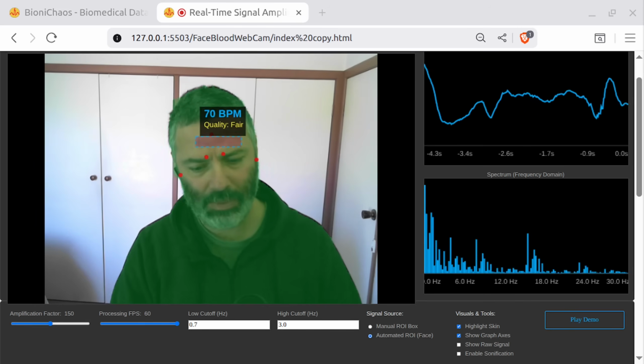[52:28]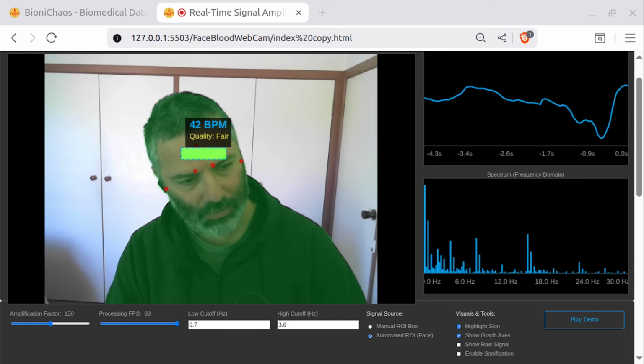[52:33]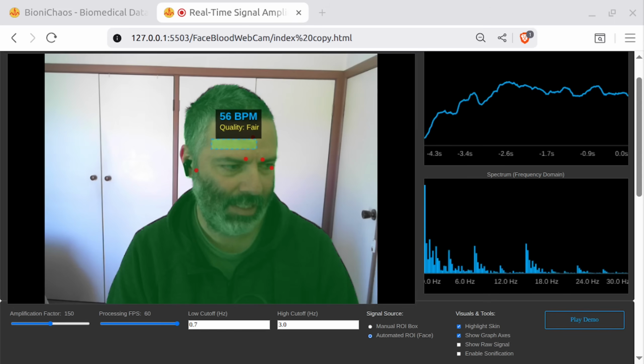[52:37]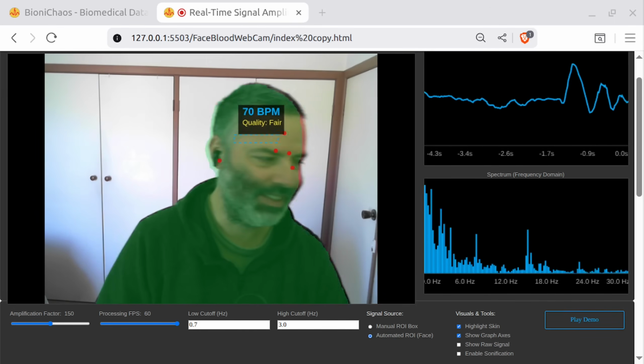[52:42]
Okay, so are we ready to regenerate the complete code with the necessary fix, or not yet? Do we need to consider anything else? Yeah, I'm not sure developing with a human would have been much better. There will be lots of programmers who disagree on that, but I can see how an experienced programmer would have fallen into the same problem.
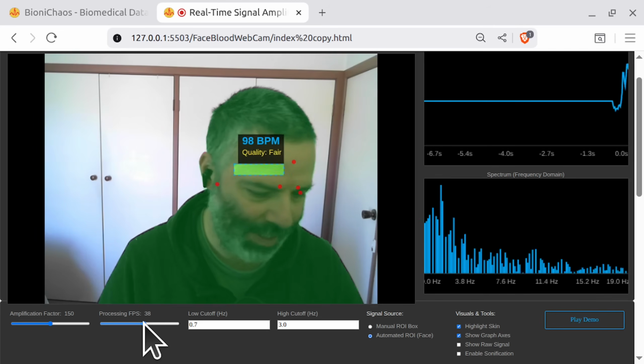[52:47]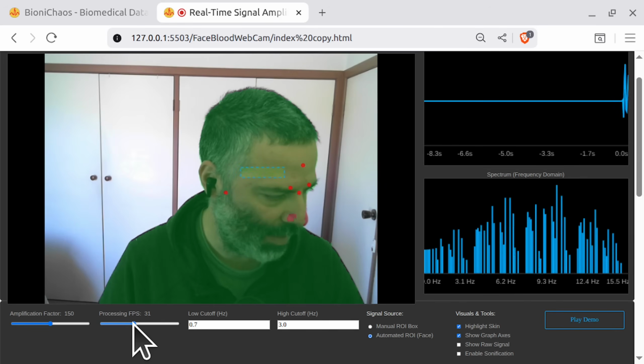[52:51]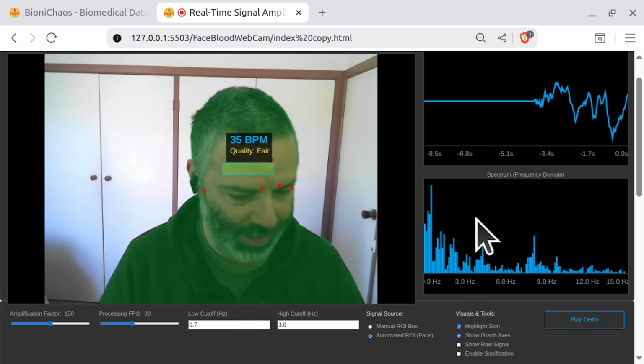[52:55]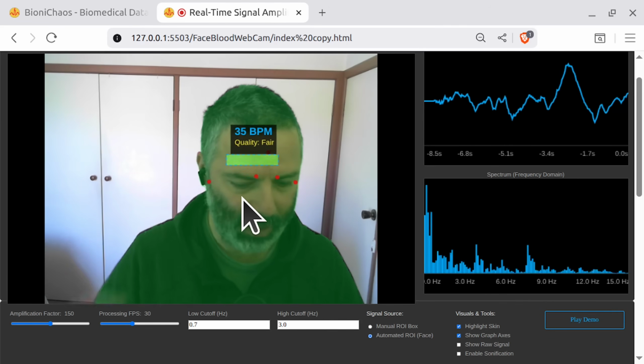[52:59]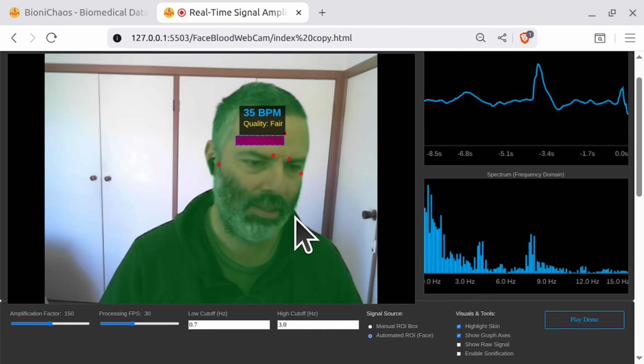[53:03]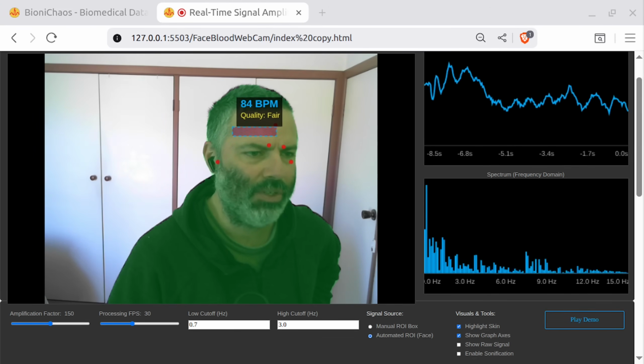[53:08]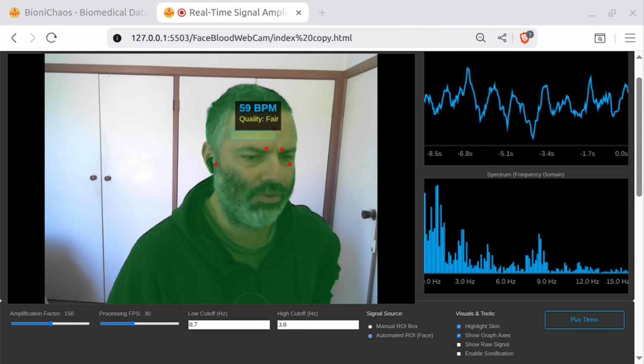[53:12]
Yeah, when changing the FPS, the filters get all messed up. And then we're looking at the second harmonic instead of the main peak in the spectrum to find beats per minute for the heart rate. It has a flat passband, which is ideal for preserving the pulse signal shape without introducing distortion. Okay, we'll see about that.
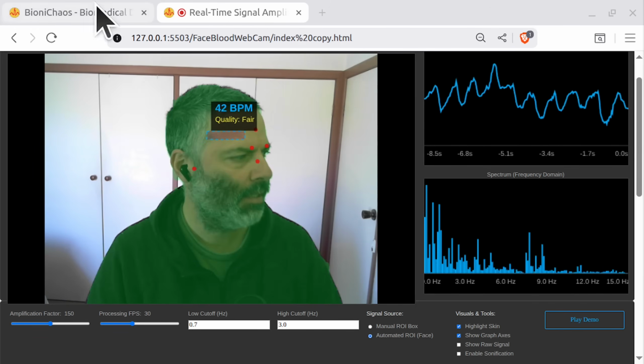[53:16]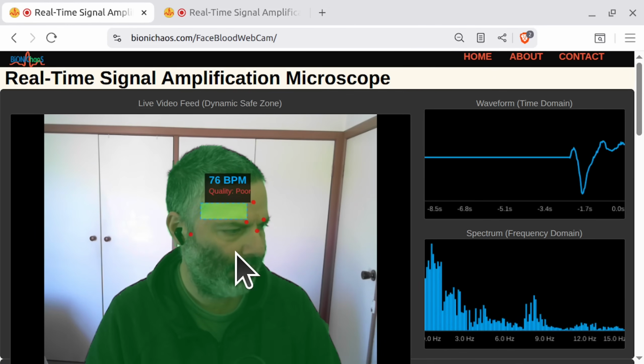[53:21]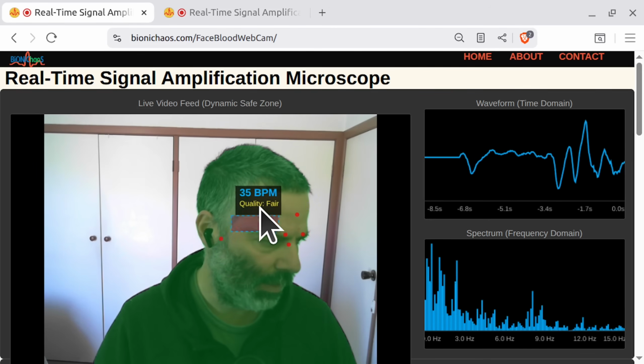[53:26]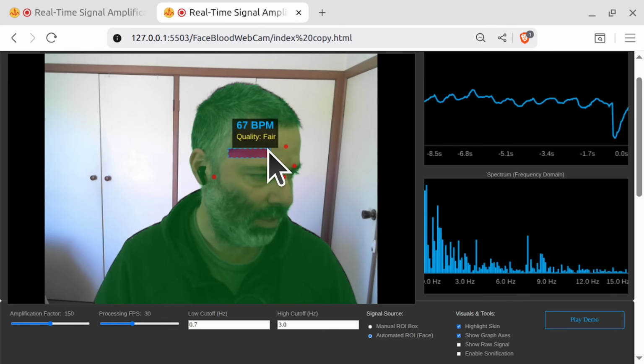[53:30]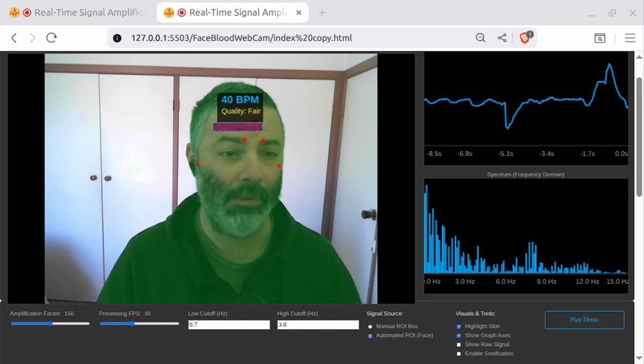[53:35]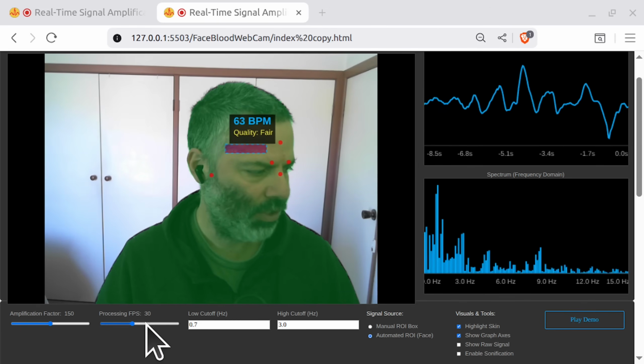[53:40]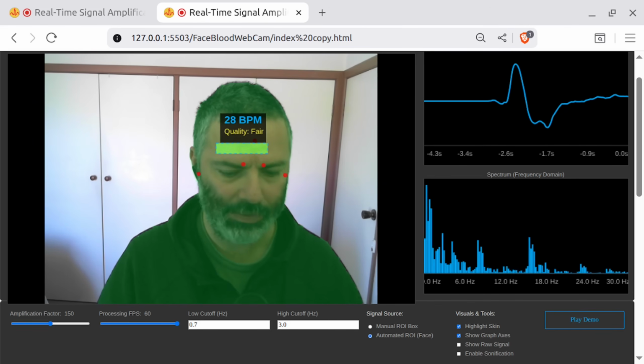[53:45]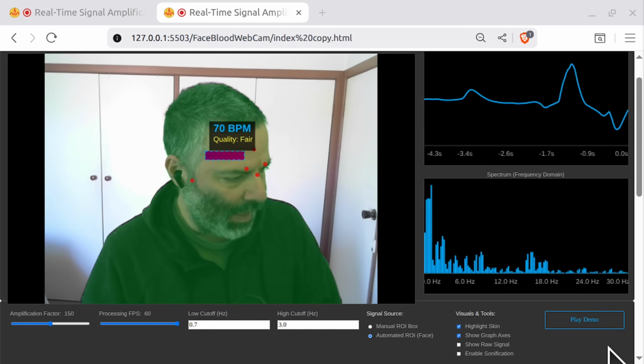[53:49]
Is it actually better or worse from what we had? Yeah, we changed the ROI, we changed the quality metric, it is now more stable, a bit less jumpy compared to before. I don't think it's much more accurate though. Essentially at 60 FPS we still should be getting 69-70 BPM. We still have the same problem.
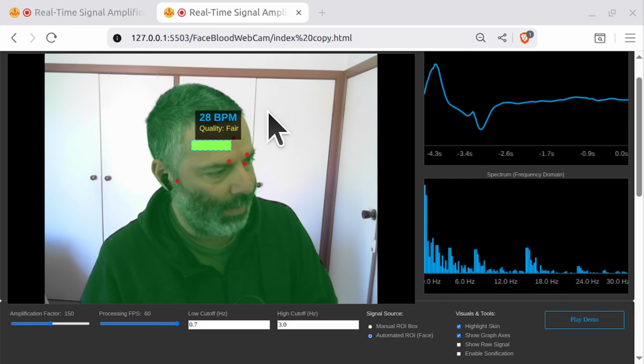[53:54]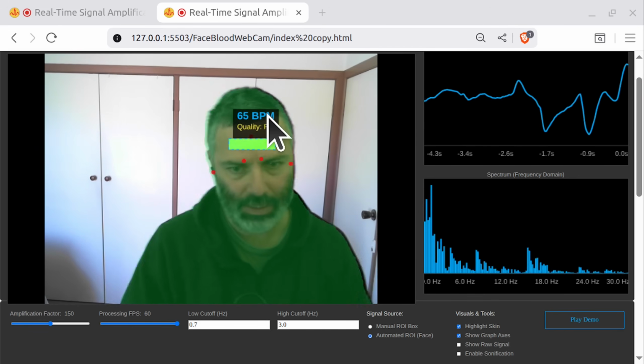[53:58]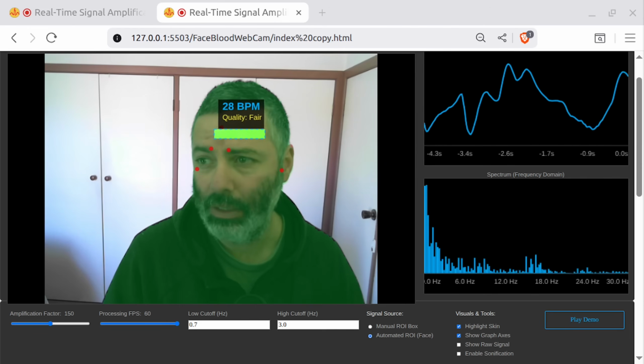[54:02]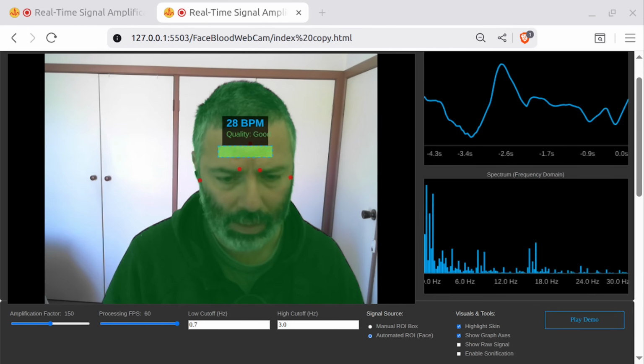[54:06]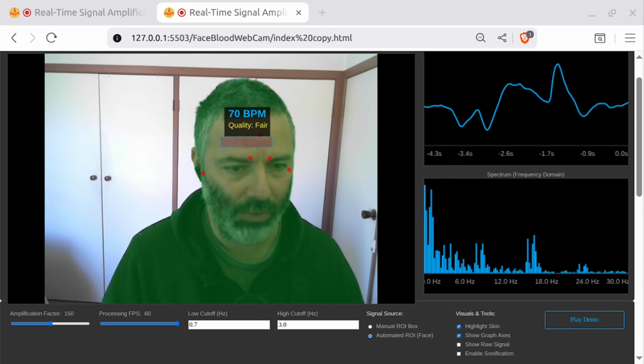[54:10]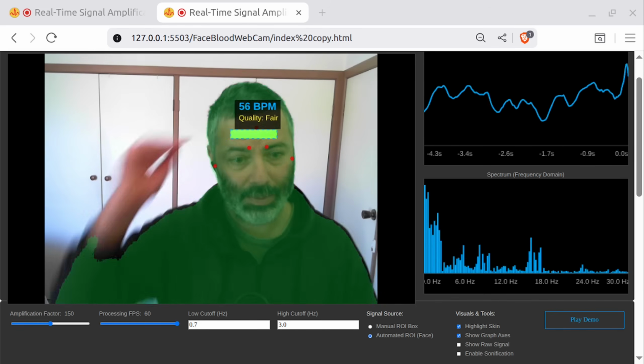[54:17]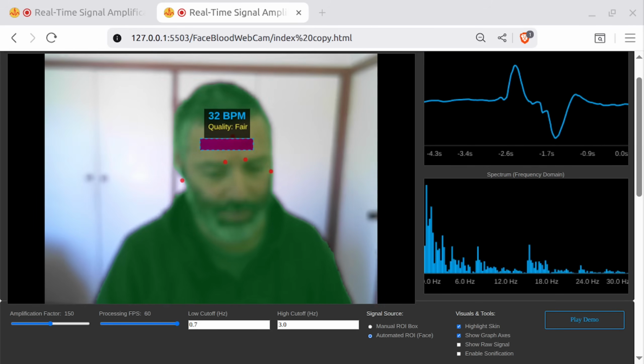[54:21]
When changing to 60 FPS, the BPM currently should be 70, not 113. So, what do you think the problem is? Okay, now we're going in circles. We don't like going in circles. So I might leave it at that.
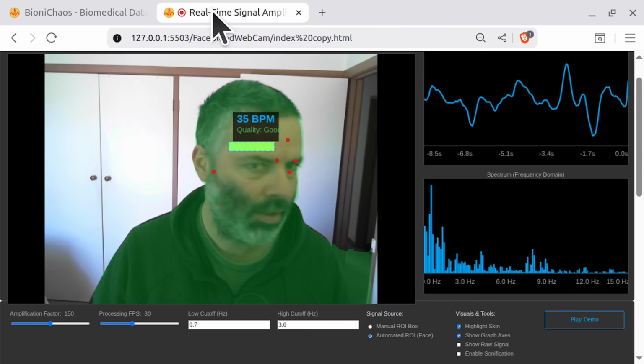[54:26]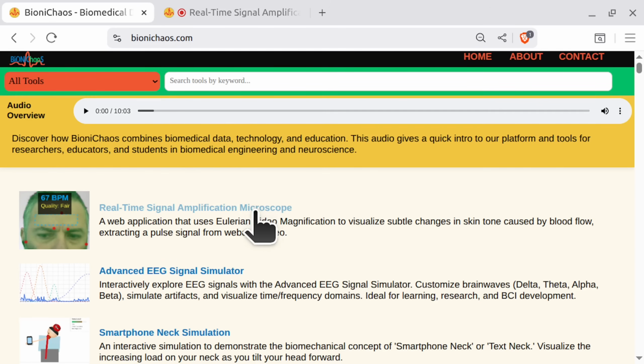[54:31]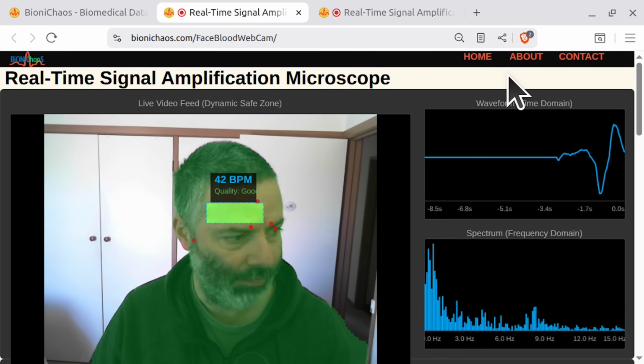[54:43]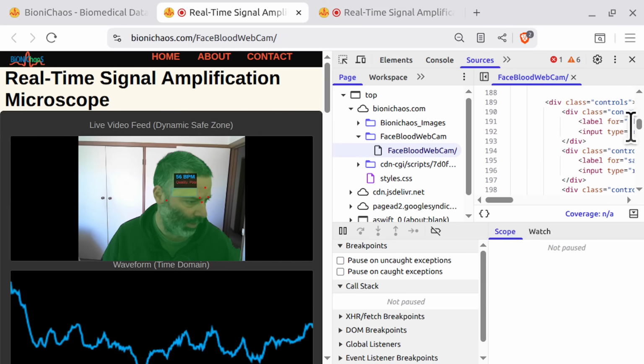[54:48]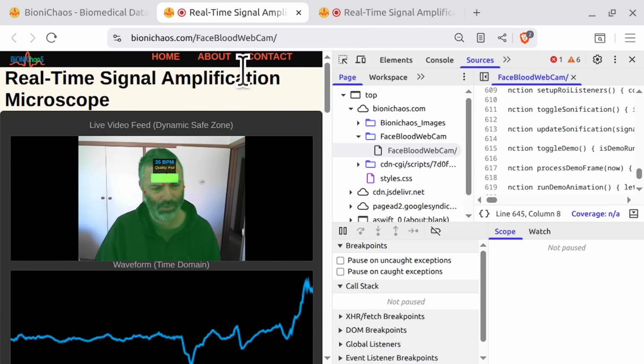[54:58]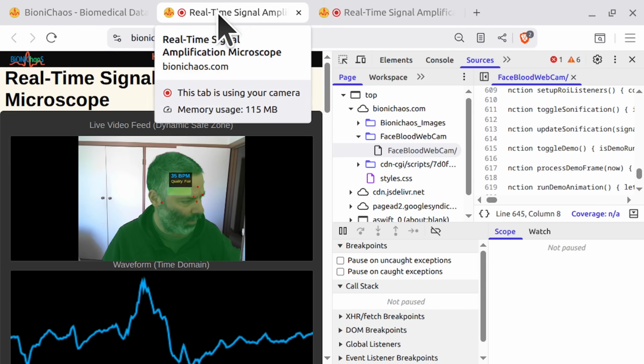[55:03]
Yes, it is open source. Everything we do is open source. All the code is available on BioniChaos.com. I can't even pronounce the name of my own website. But when you go to the tool, hit F12, sources, this will be the whole code, because this implementation is JavaScript. So all the functions. In theory, it should work even if you don't have a GPU, but I'm not sure how much memory it will take.
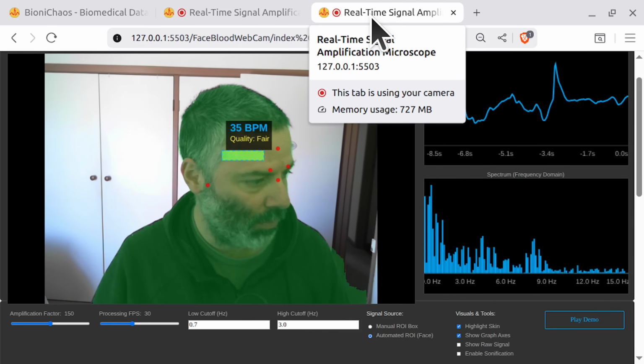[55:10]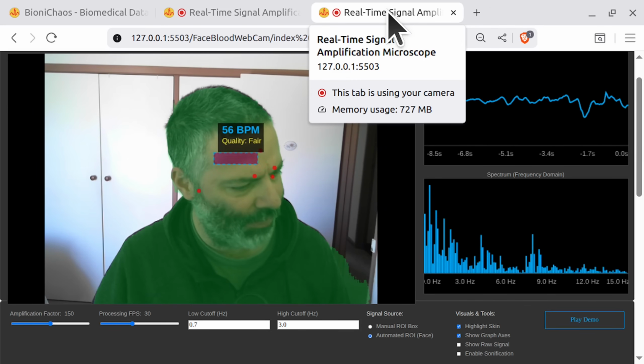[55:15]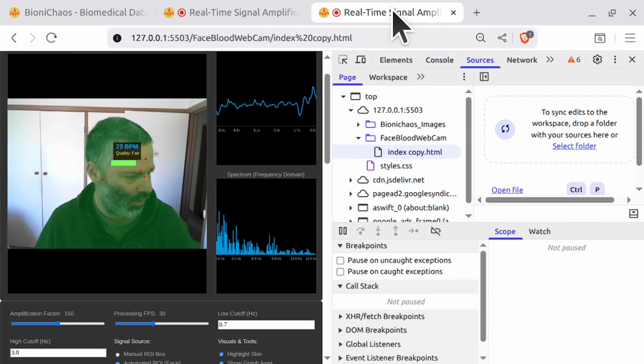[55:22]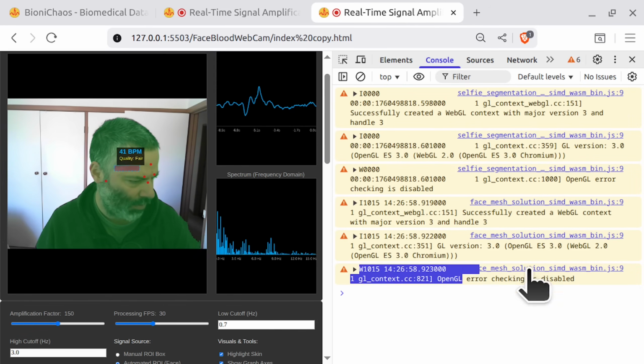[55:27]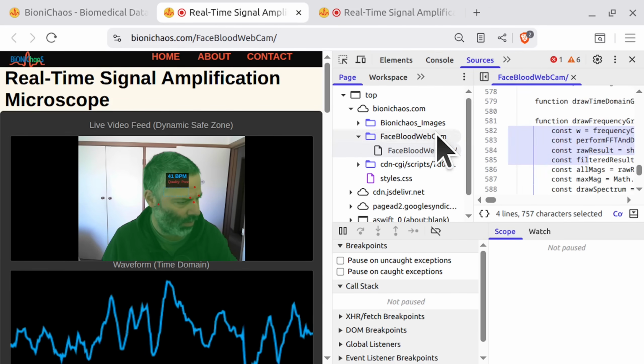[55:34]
In my case, it takes 115 megabytes in the browser. Ooh, 727. I don't know, I think it's WebGL related. Maybe the WebGL is not actually working anymore. Well, those are warnings. Anyhow, the source code is on the page, for your convenience. We are doing everything for your convenience.
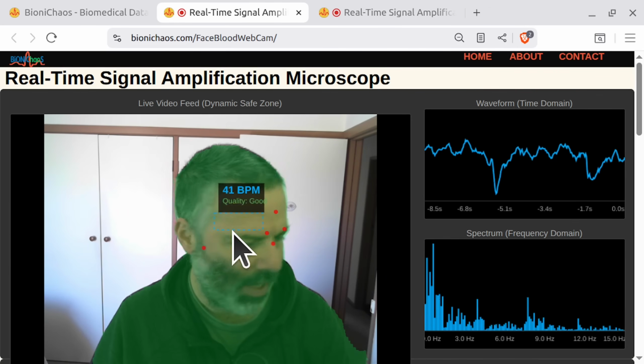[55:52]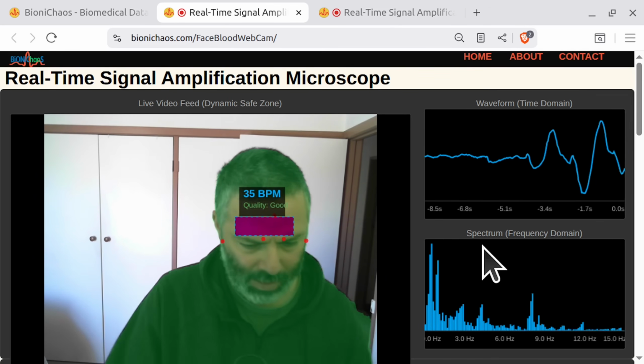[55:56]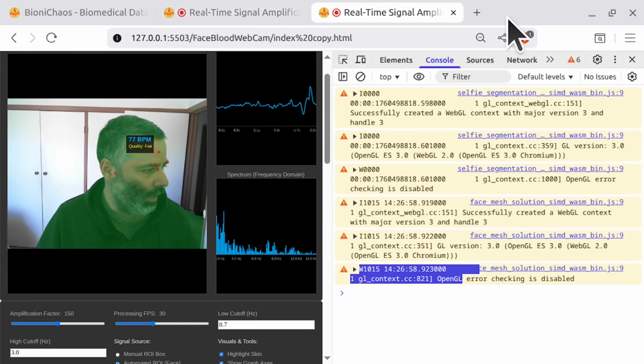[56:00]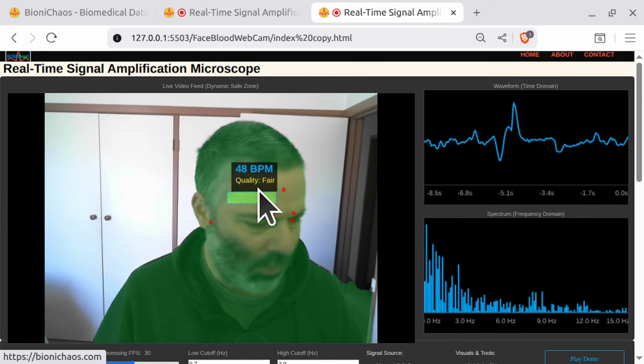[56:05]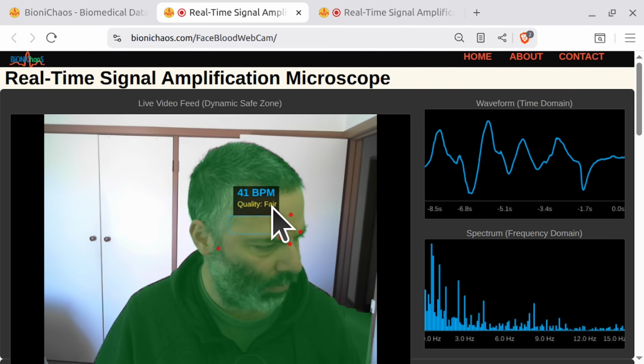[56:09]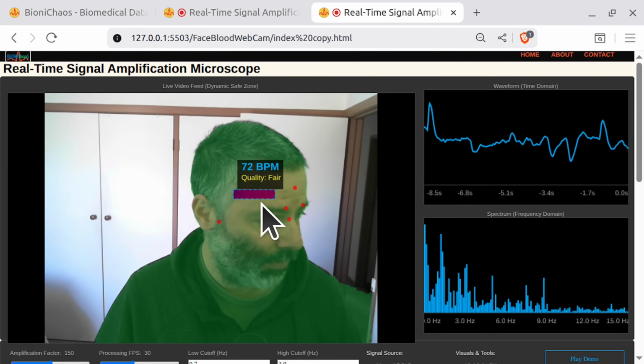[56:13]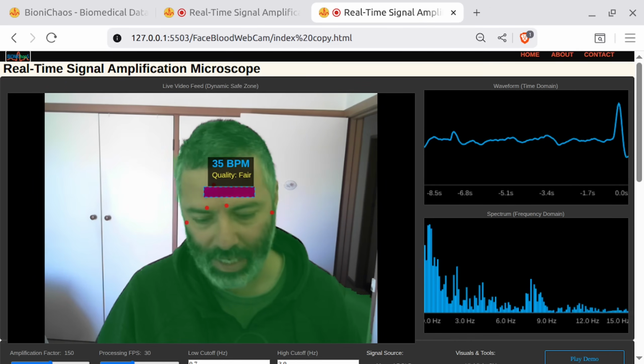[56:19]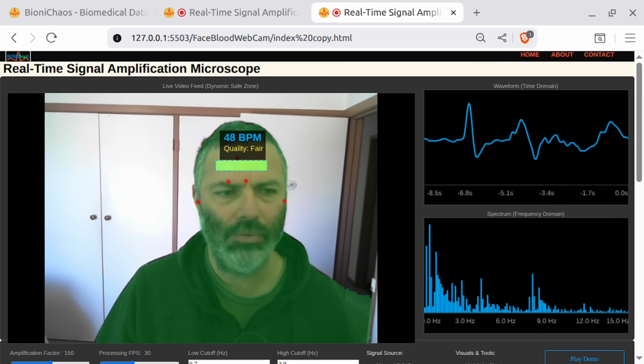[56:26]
We're generating a new version of this, by the way. From the original one that is deployed, we improved the ROI. ROI is not return on investment, by the way, it's region of interest in this case. And then we also improved the quality metric, so it should not fluctuate as it used to. I don't think it's still accurate though, because even if the signal is good, the quality is fair. I was able to get it to good at some stage, but you need to control the light in the room, things like that.
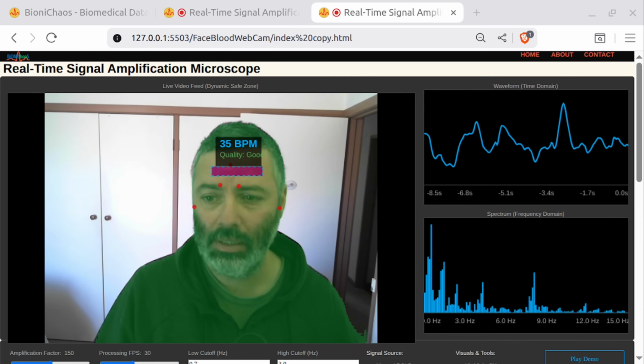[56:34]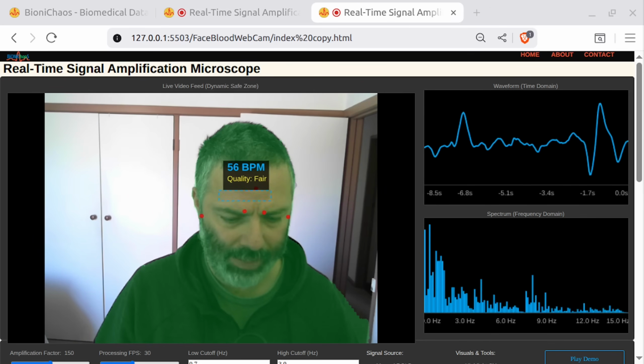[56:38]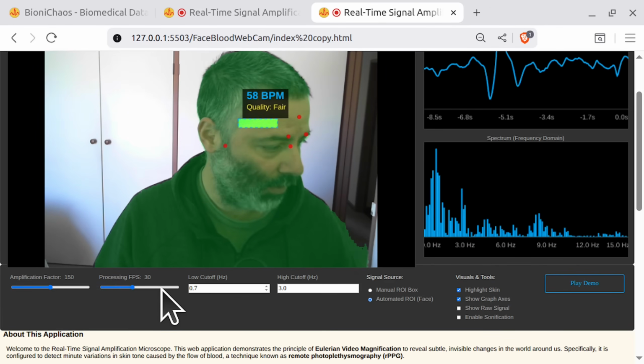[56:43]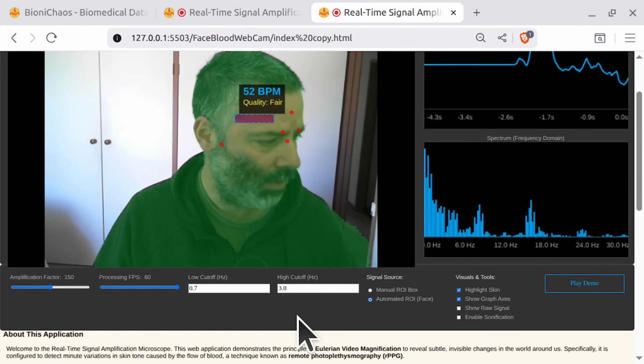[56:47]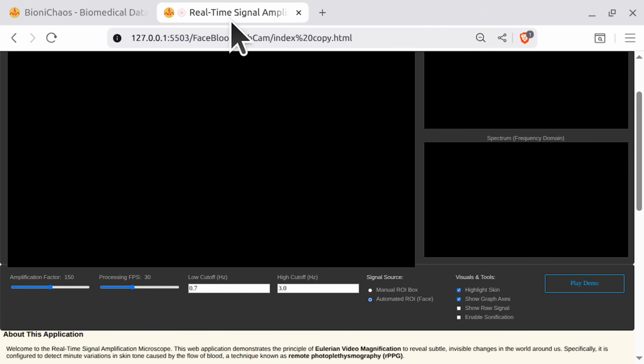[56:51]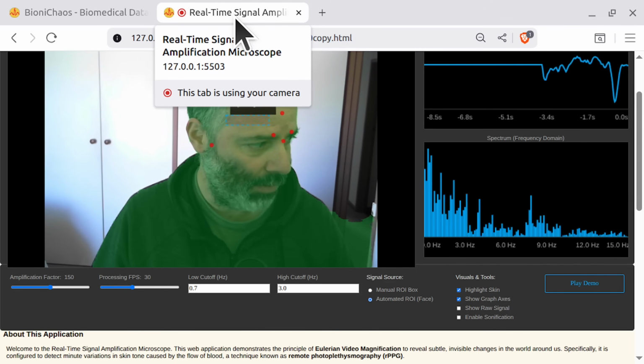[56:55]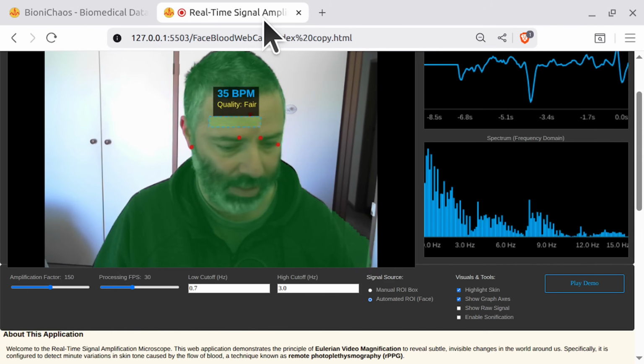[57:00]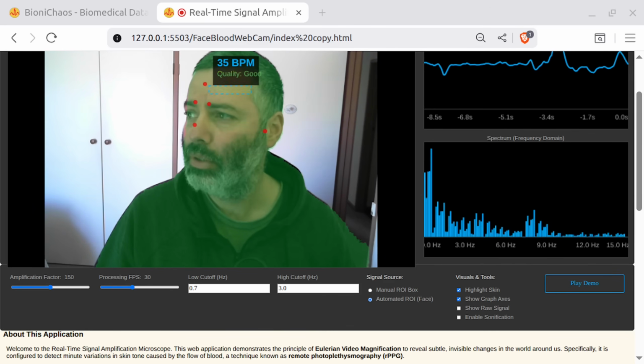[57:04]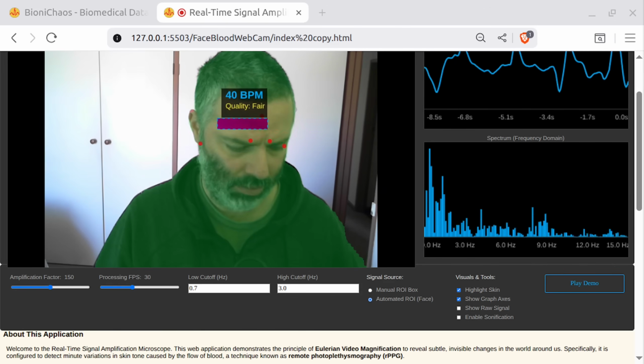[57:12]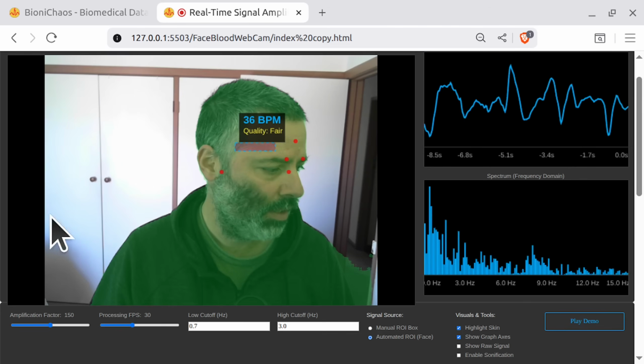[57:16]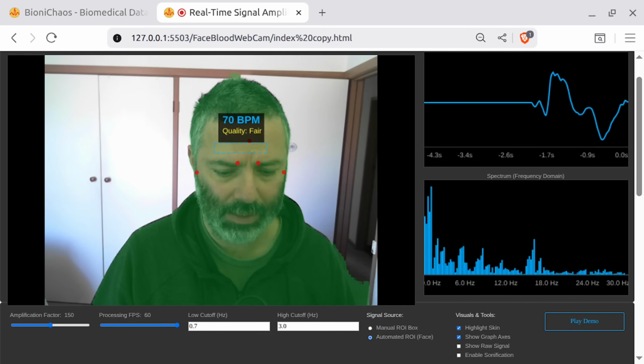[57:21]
In this version, there's another thing we are trying to fix, and that's the FPS. The problem is, if you have a different FPS on your machine. I'm using 40, I can go up to 60. If I restart the page with 30, it should be using only 100 megabytes in the browser. Maybe if we increase FPS, it shoots up, I don't know. Anyway, Gemini promised us to fix the code. At 60 FPS we should still be getting our 70 BPM.
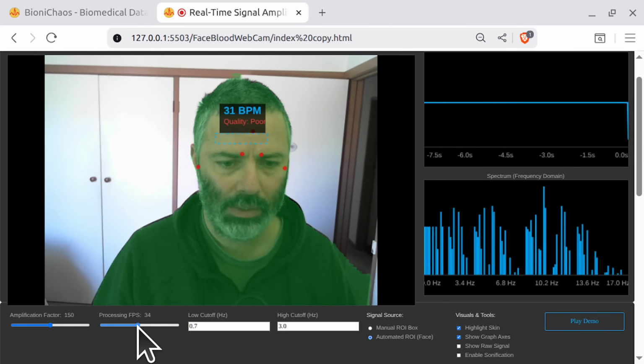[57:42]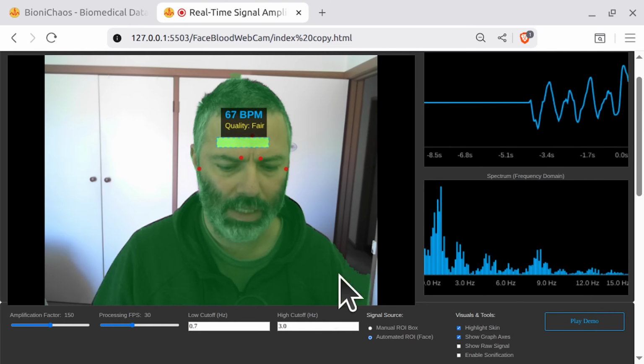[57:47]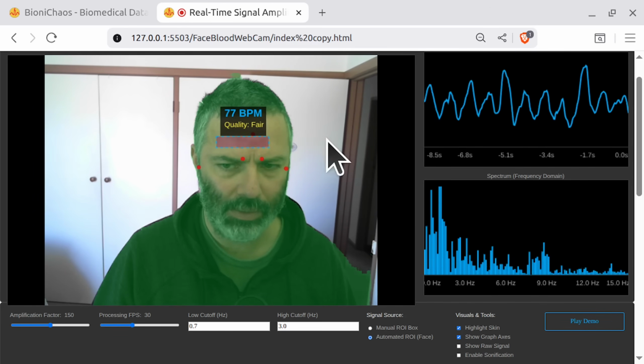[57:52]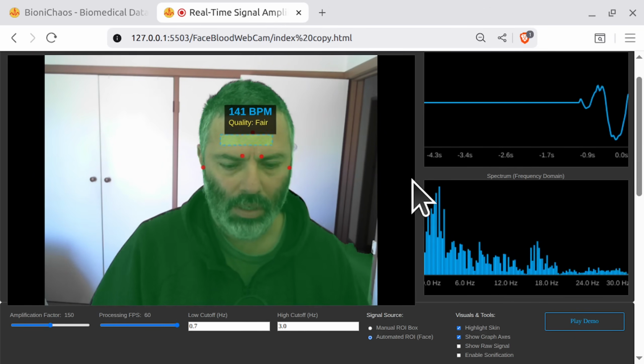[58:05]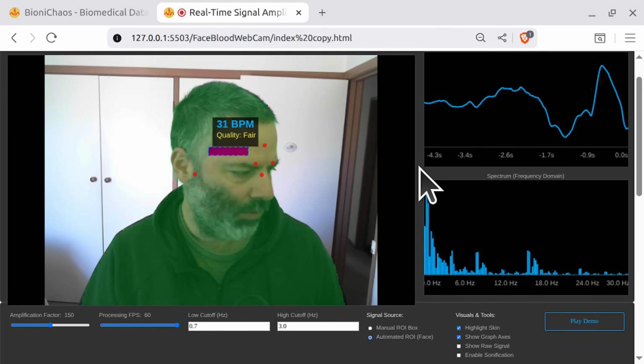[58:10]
That's incorrect. It's really annoying. Gemini can't solve this problem. All it needs to do, supposedly, is modify the filters to actually use the current FPS that we're using. This is the correct BPM, 70, 71. Yeah, it's nice and strong. Oh, but we're going in circles with Gemini. It's not able to solve it.
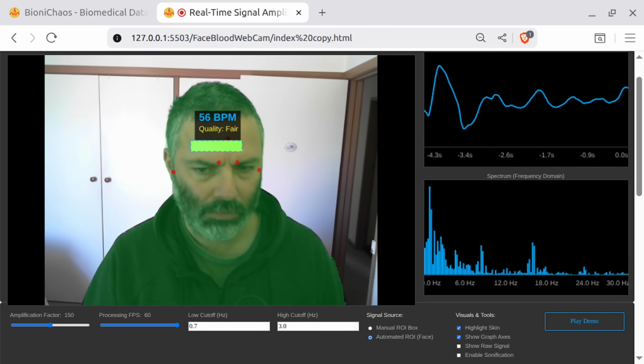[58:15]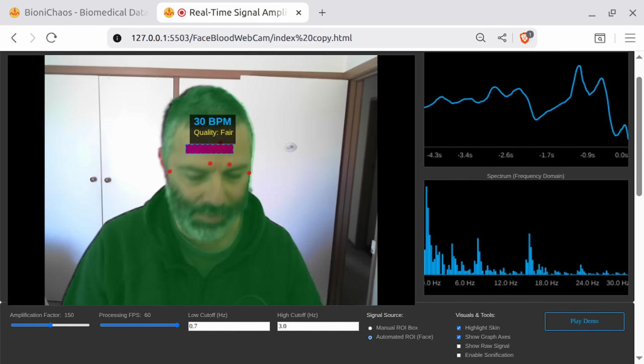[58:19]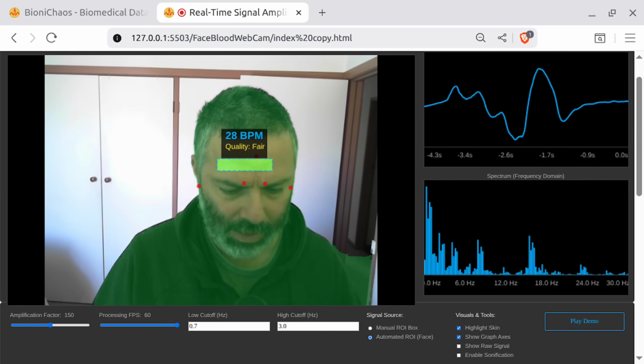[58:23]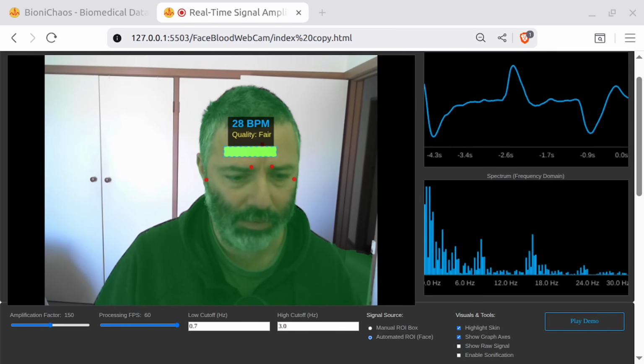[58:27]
And obviously, every time you ask it, it will say, yes, you are absolutely correct. And I can fix this for you. It will explain what the error is.
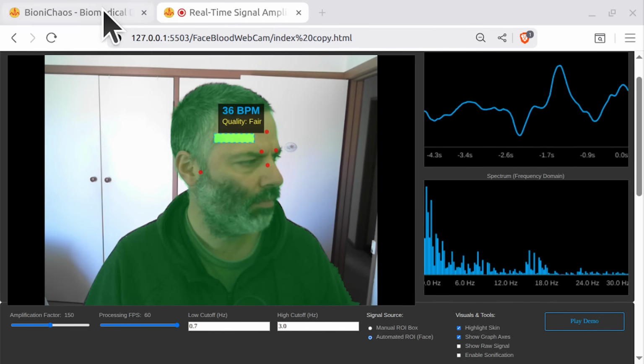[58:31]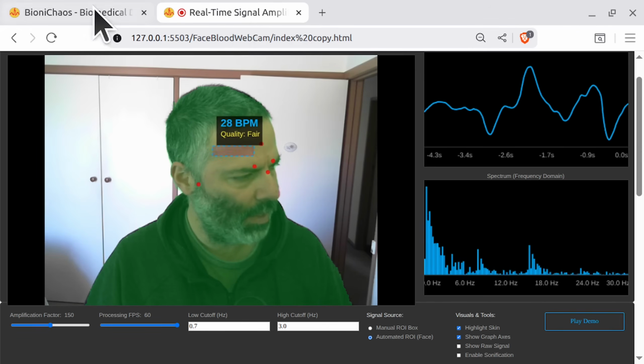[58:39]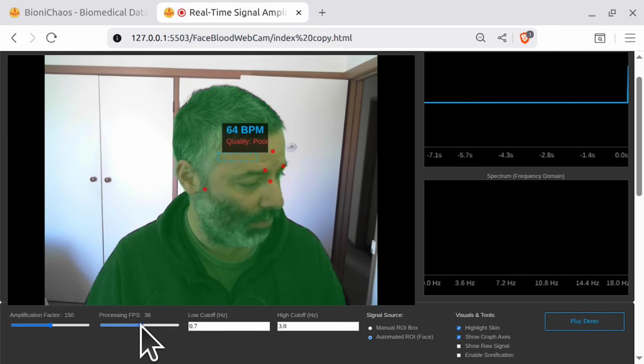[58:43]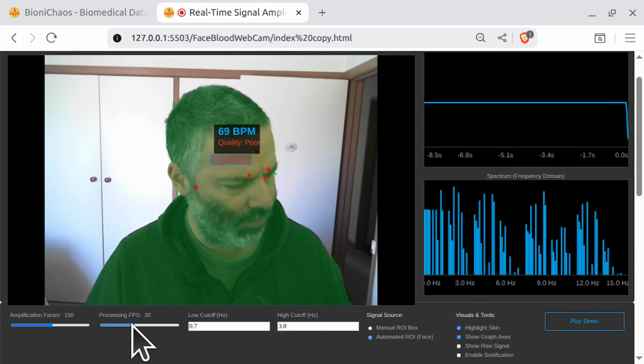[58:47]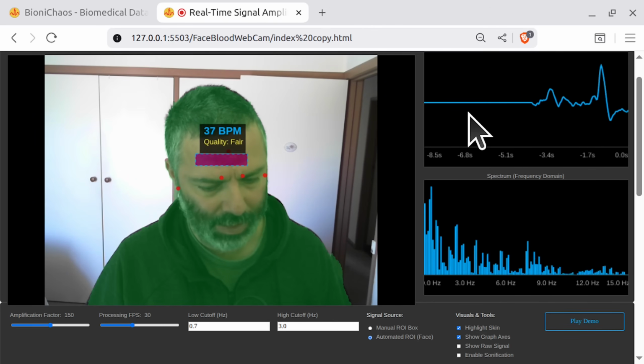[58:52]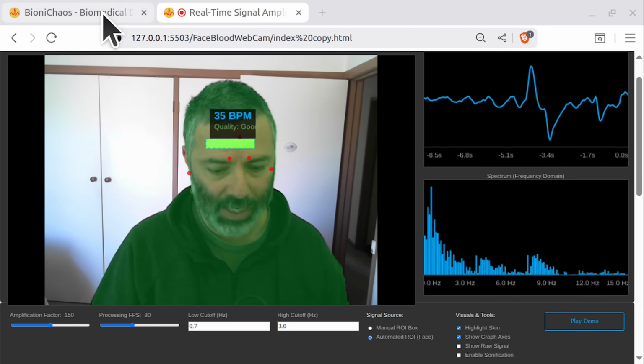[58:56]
As I said, everything we do is on BioniChaos.com. Go check it out, provide your feedback. We'll try fixing the FPS, or should we just remove that option? But then the question is, what happens if your system is running at a different FPS? Then we will get an incorrect reading. Let me know if you have any other questions.
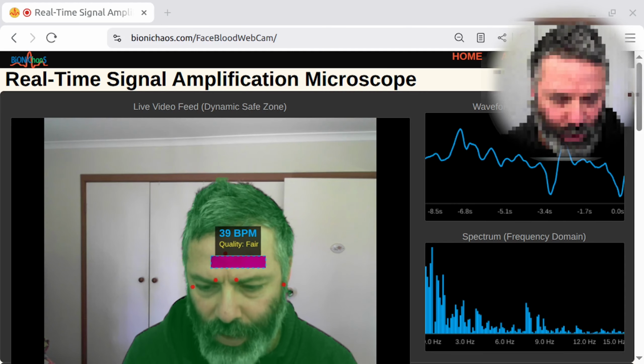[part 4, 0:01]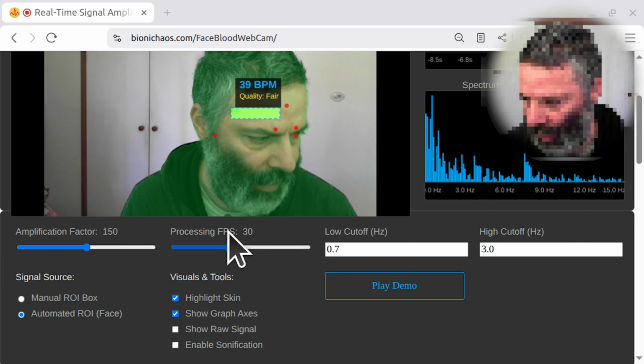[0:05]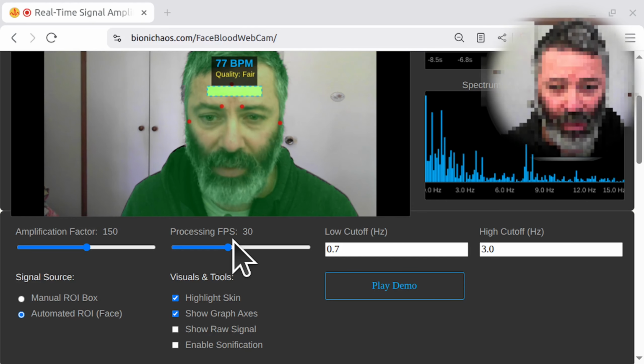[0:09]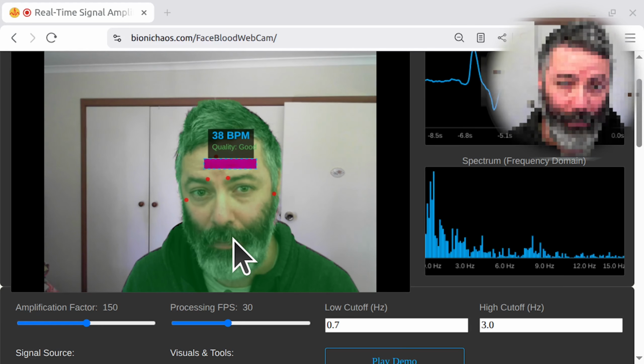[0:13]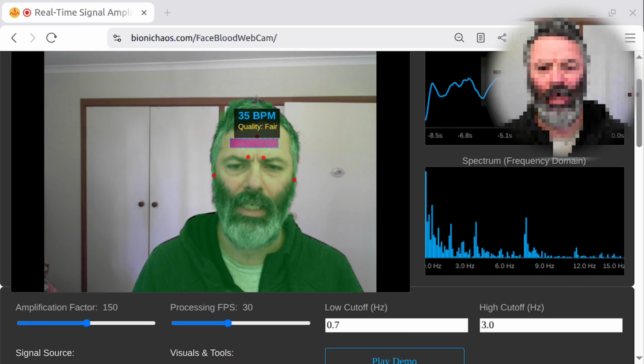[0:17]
Again, we want to check how the FPS settings work. So the processing FPS is currently set to 30. If we change it, is the calculation of the BPM still accurate or not? Yeah, we have an incorrect BPM calculation when changing the signal processing FPS.
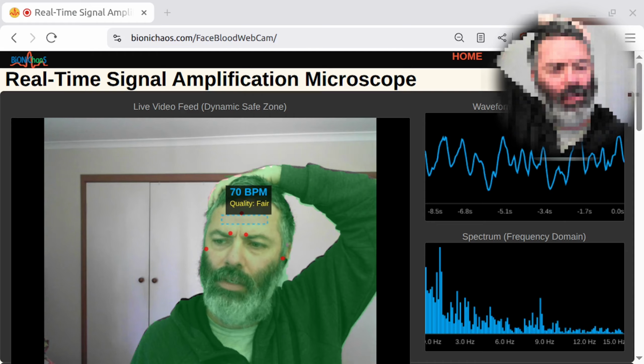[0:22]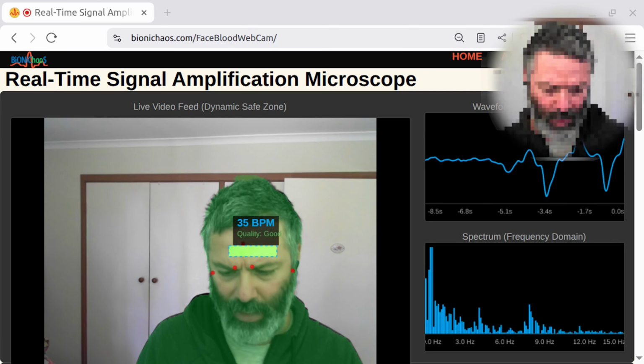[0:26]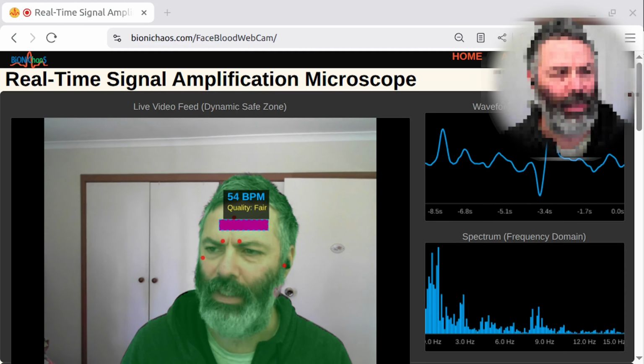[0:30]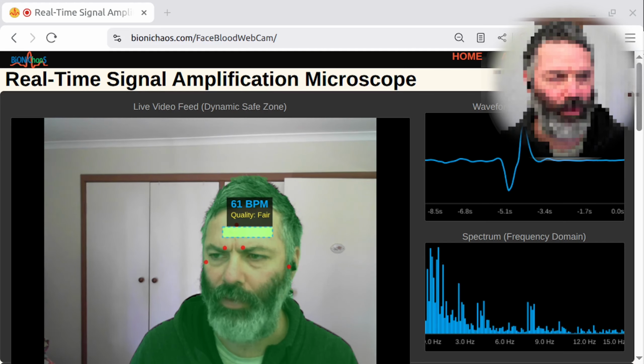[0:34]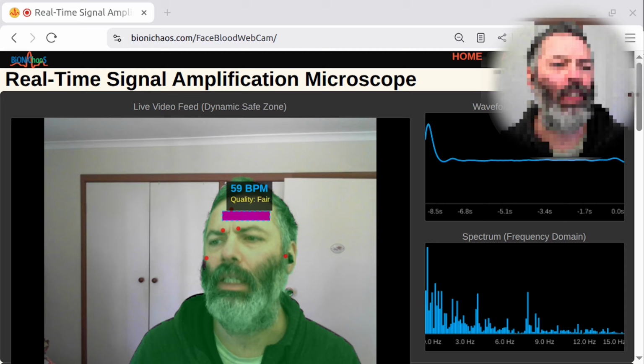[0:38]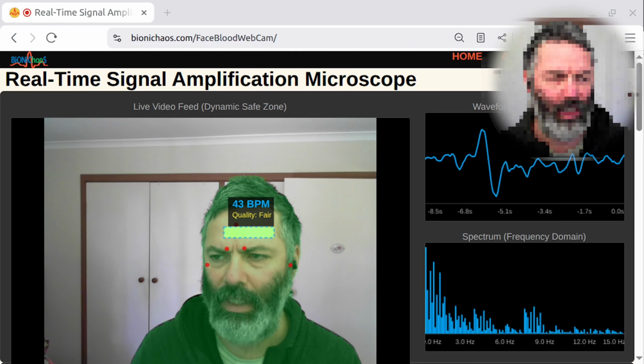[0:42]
This is interesting. It's replacing the filter. Why are we replacing the filter? Based on your detailed analysis, the issue with the BPM calculation at different processing frame rates stems from the bandpass filter implementation. The existing filter doesn't correctly handle frequency scaling when the sample rate changes, leading to inaccurate peak frequency detection.
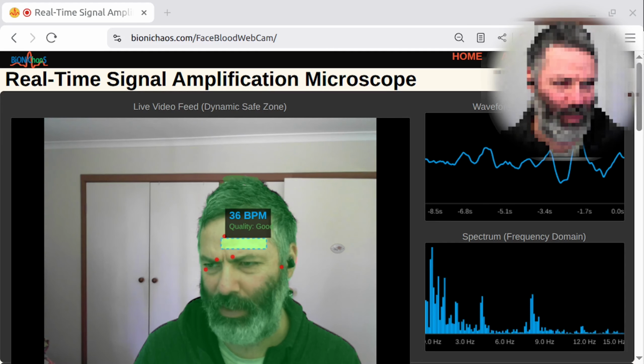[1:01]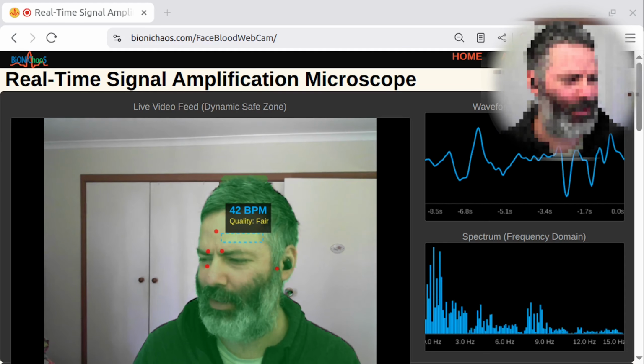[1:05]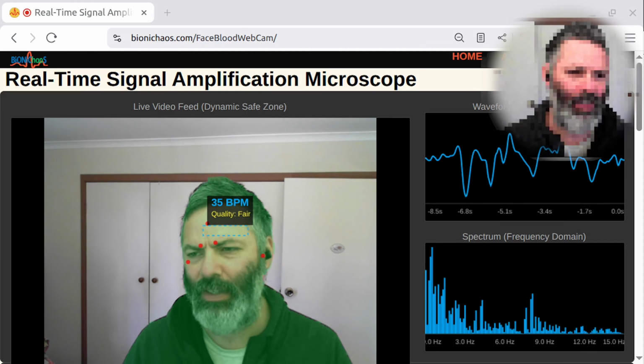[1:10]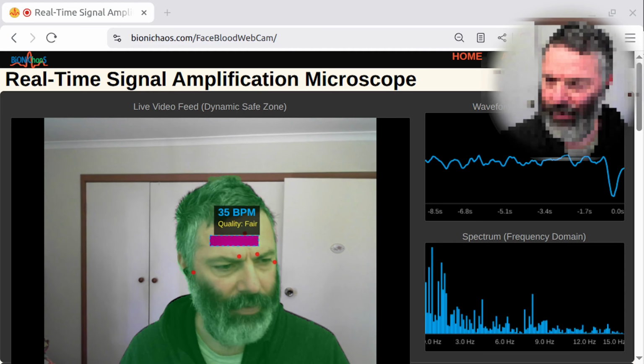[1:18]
I will replace the current Butterworth bandpass filter class with a robust second order Butterworth filter designed using a bilinear transform with a frequency pre-warping. Doesn't that sound legit? This ensures the filter's characteristics remain accurate across different sampling rates, resolving the BPM calculation error. And it's proceeding with the changes.
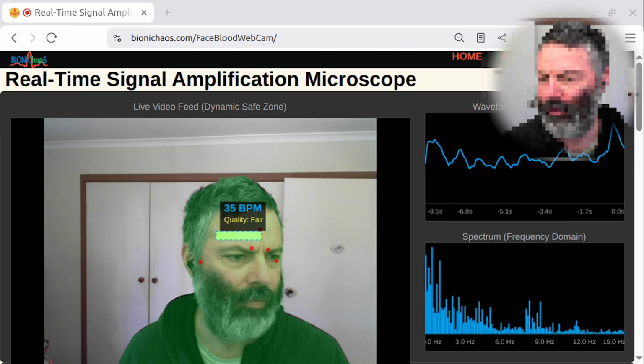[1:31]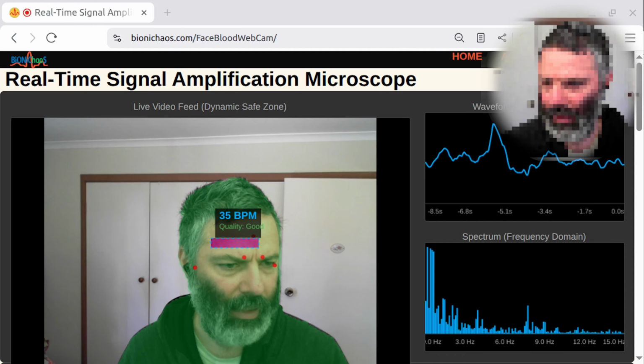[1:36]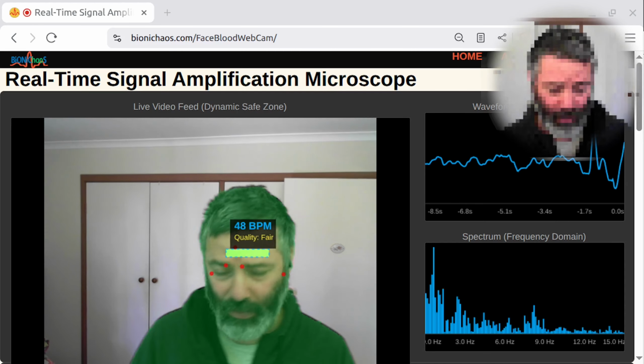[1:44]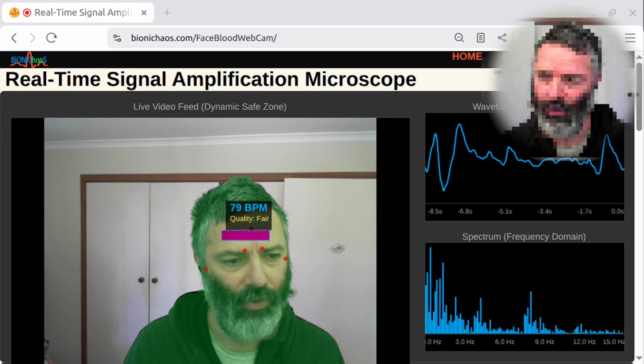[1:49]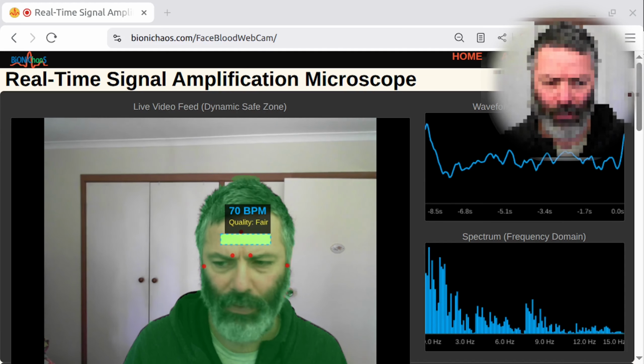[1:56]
And what is the new Gemini 3 Pro suggesting? It regenerated the code. Why? Regenerate the whole code. I have replaced the flawed Butterworth bandpass filter class with a new implementation that uses a cascade of second order Butterworth high pass and low pass filters. That actually makes more sense to me. Yeah, these filters are calculated using a bilinear transform method using the math.tan pre-warping step. So is it the same?
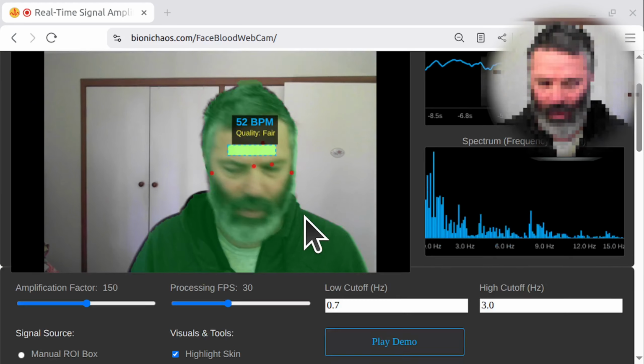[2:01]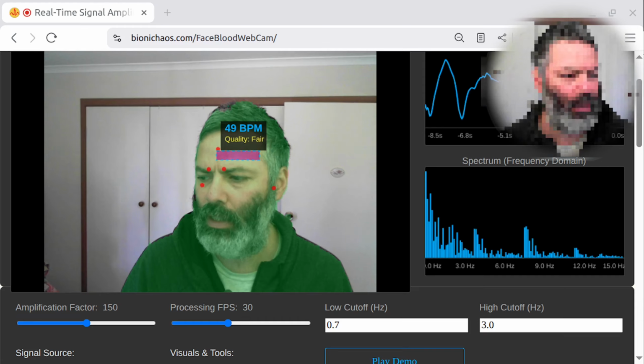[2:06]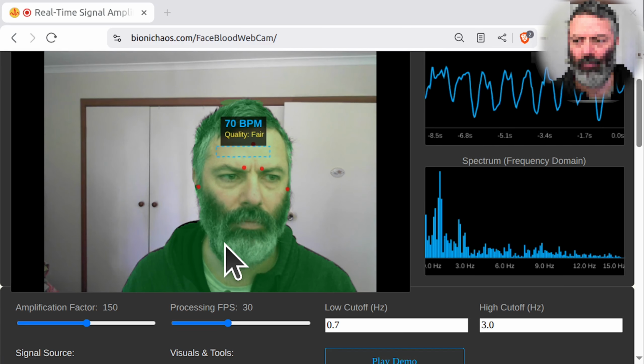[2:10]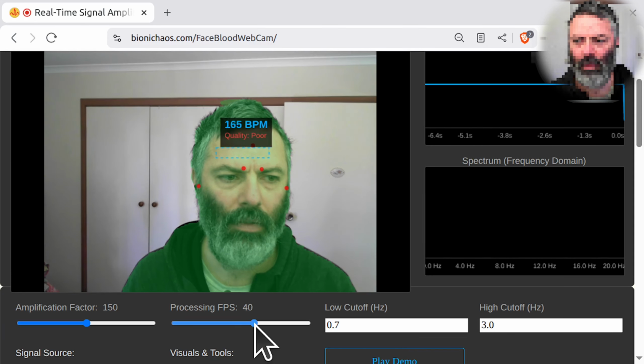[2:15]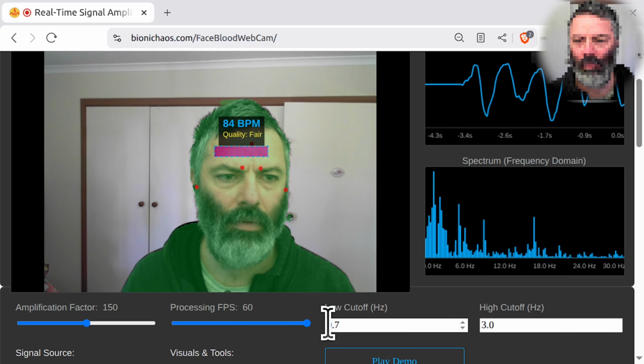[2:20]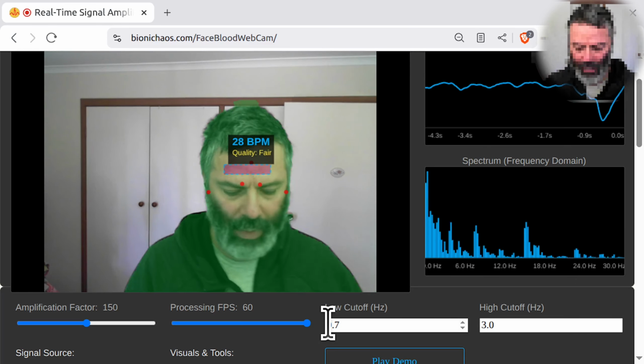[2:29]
And we can test it. We should be able to replicate the problem first, don't we? Let's replicate the problem first. Yeah, so that's a correct measurement. Yeah, and that's an incorrect measurement.
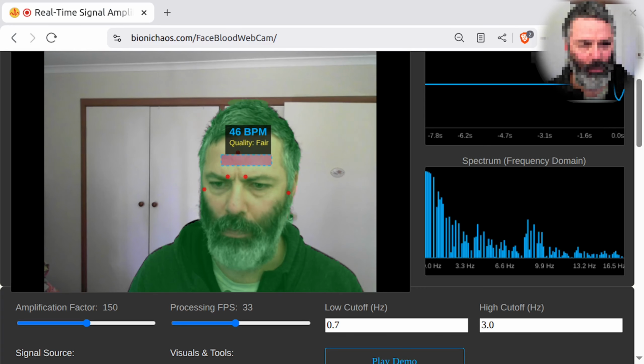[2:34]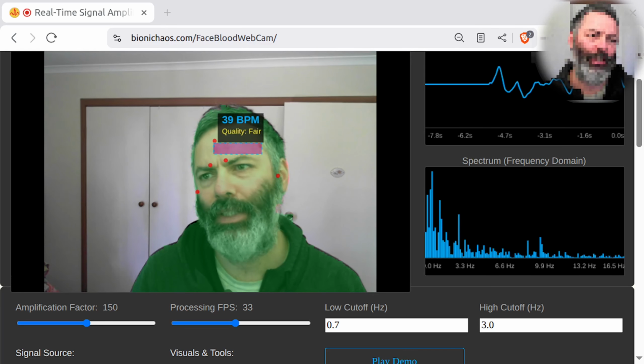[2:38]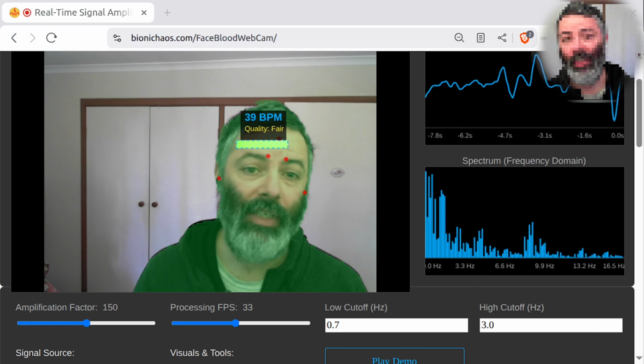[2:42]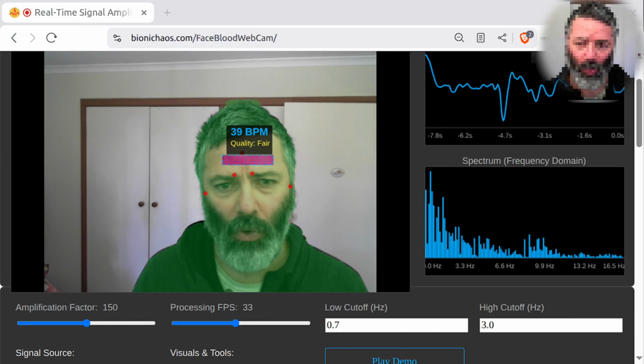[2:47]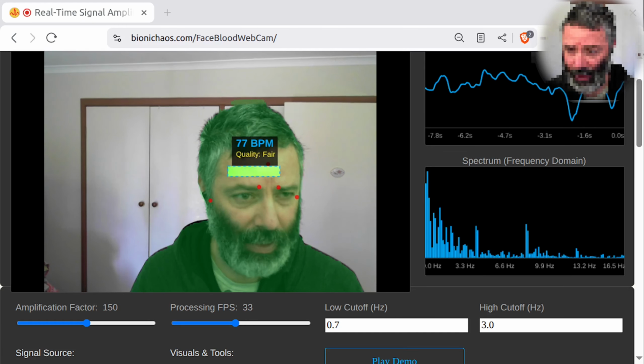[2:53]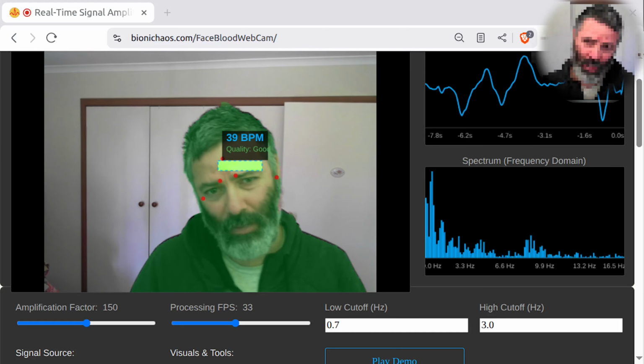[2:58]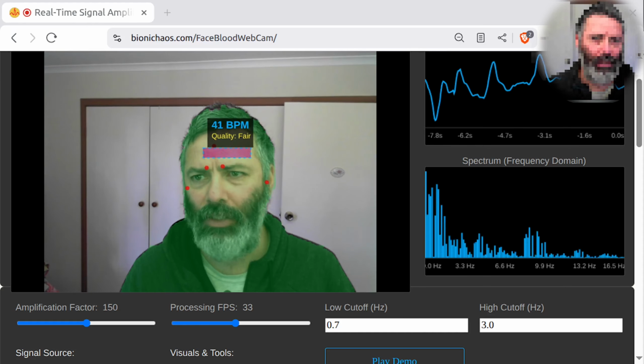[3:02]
So supposedly, after it changes the code, let's go with Gemini Code Assist. So yeah, the advantage of using the AI Studio model is you have access to a more recent model, but then the Gemini Code Assist has access to the code, so it's modifying the code directly, whereas the Gemini 3 Pro just regenerated the whole thing. So let's try what Code Assist did.
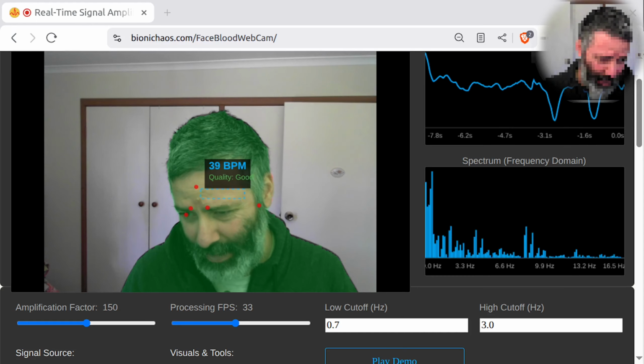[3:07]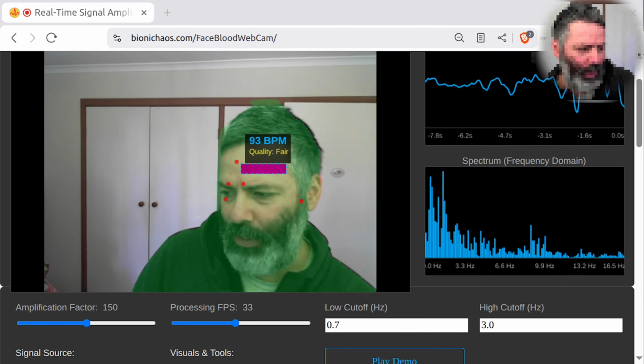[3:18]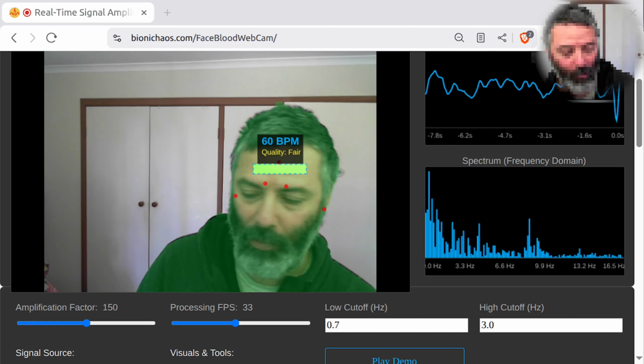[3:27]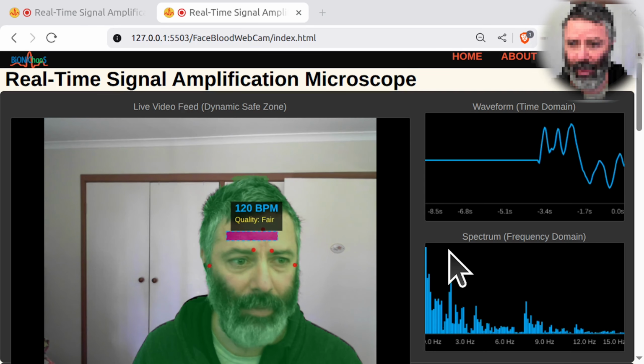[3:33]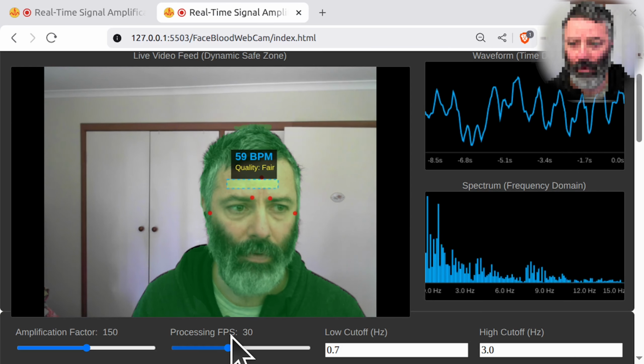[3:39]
It has replaced the filter implementation as requested. The new filter uses the bilinear transform method to ensure accurate BPM calculation across different processing frame rates. Yeah, and then the next question would be what happens if we have a non-stable FPS, like on a lot of mobile devices, or at least my mobile device. So this will be the same thing, except that now, yeah, we have a good reading again. Yeah, that looks legit. And when we change it to 60, we should still have 70 BPM.
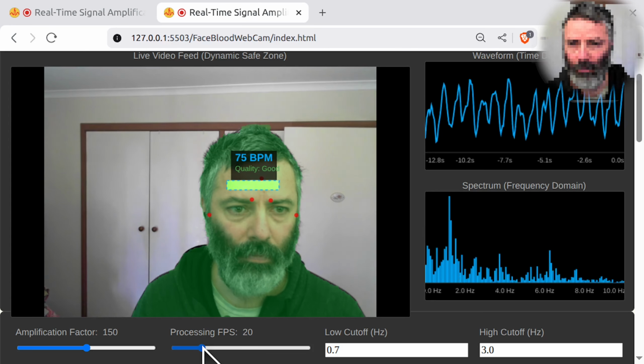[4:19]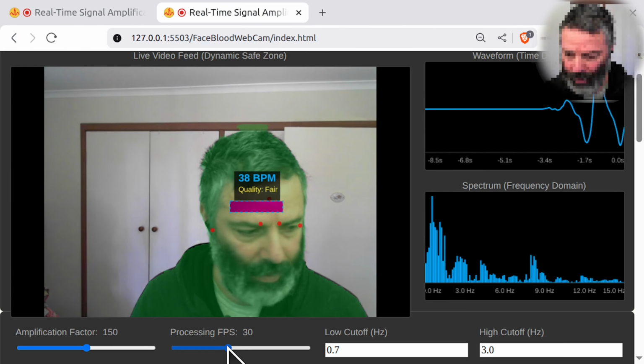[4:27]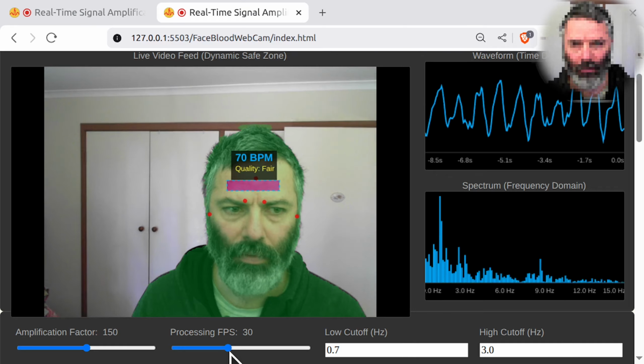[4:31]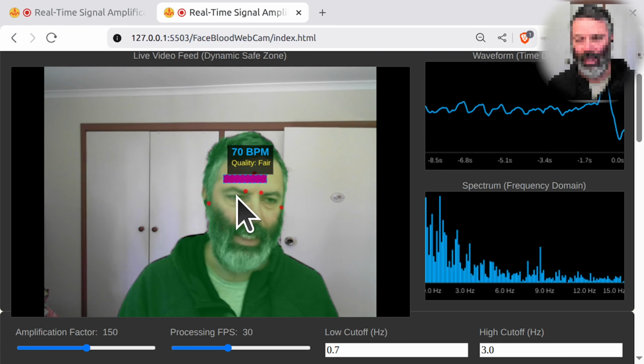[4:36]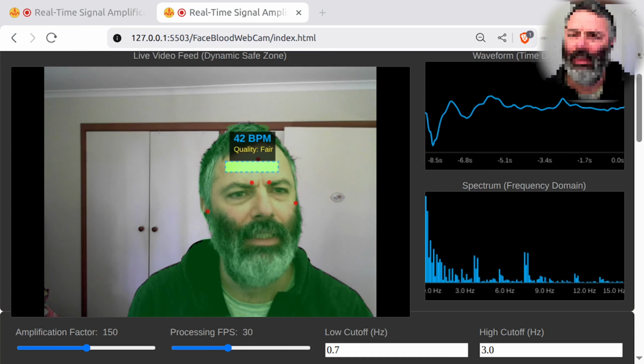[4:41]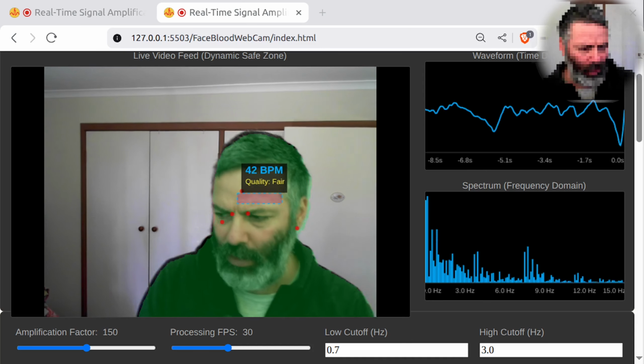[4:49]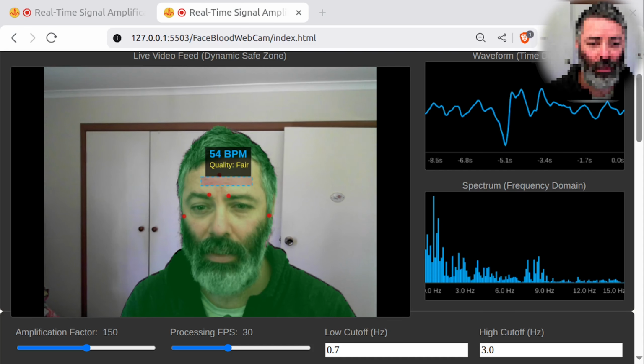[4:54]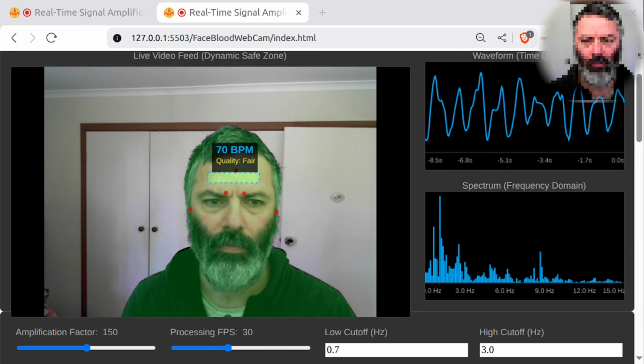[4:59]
Yes, that's inaccurate because we should be getting this 70. So no, there's still something wrong. Yeah, I'm sure that's the correct value because we did a comparison to a smartwatch. But yeah, that didn't seem to work. I don't know why it's something else. Let's try the implementation from the new and amazing Gemini 3 Pro.
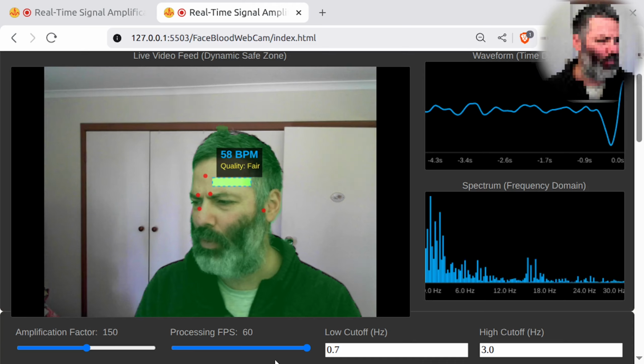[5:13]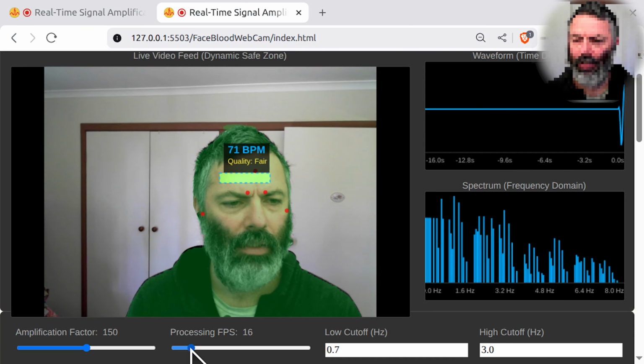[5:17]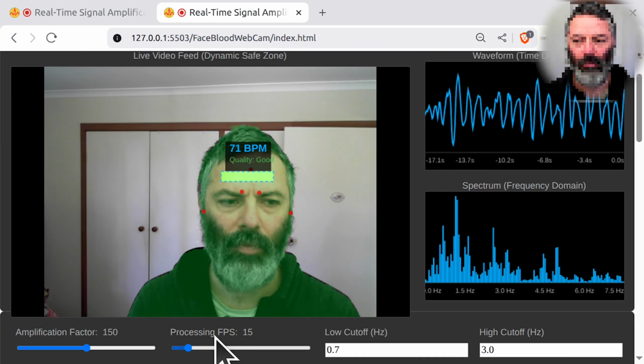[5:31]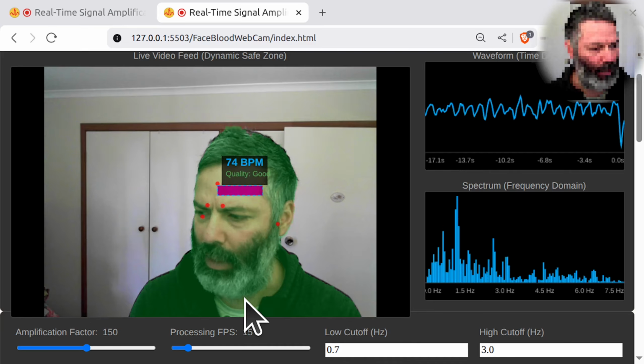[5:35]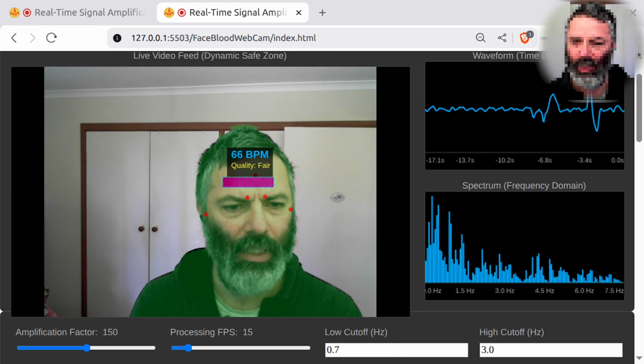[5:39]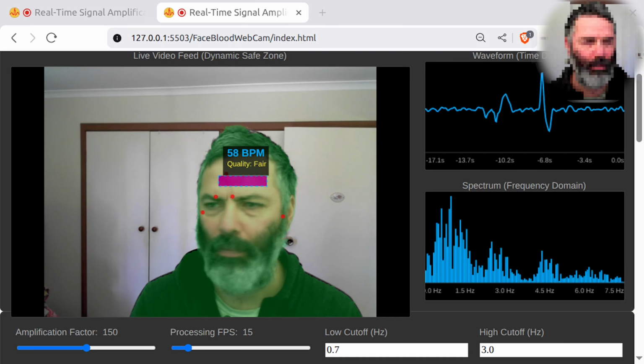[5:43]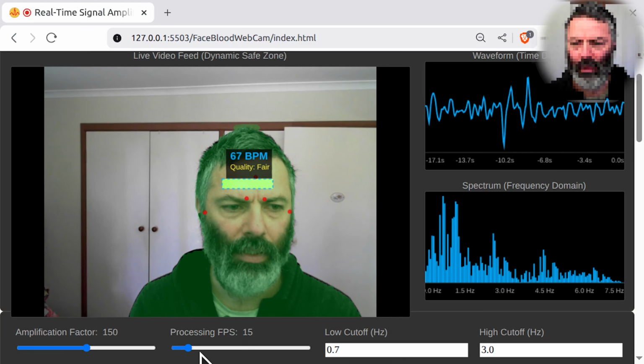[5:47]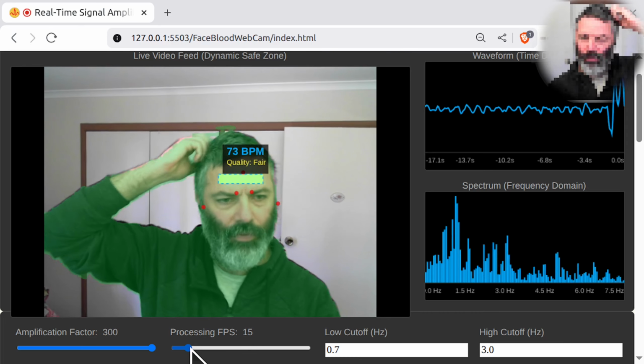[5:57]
Yes, we got the 70, that was correct. Now we're getting more noise in it. Wait, what happens with, say, 15? Should be still getting the 70. This seemed to work. Yeah, so the new Gemini 3 potentially has solved the problem. So we're currently on 15 FPS. Yeah, it's actually pretty accurate now, even with 15 FPS.
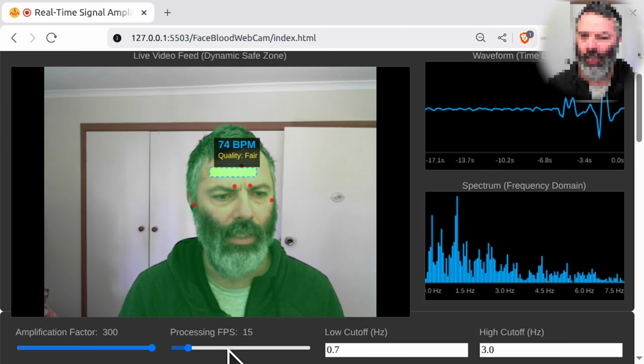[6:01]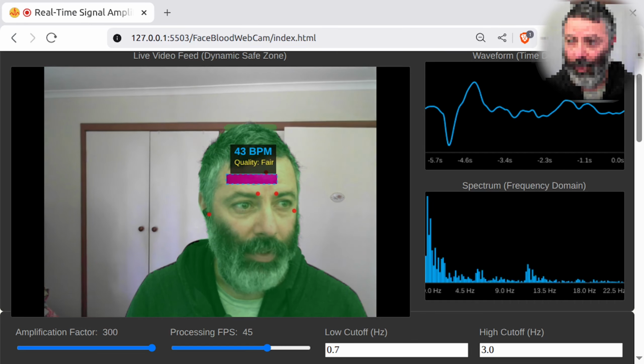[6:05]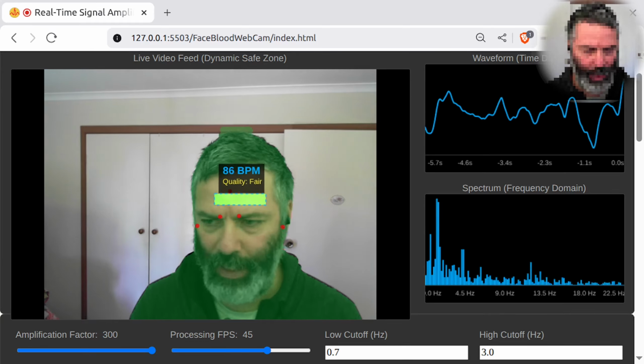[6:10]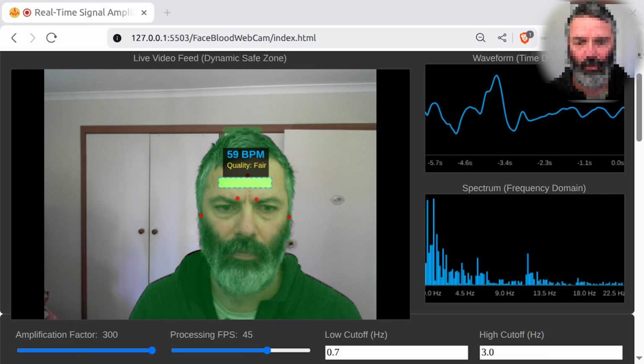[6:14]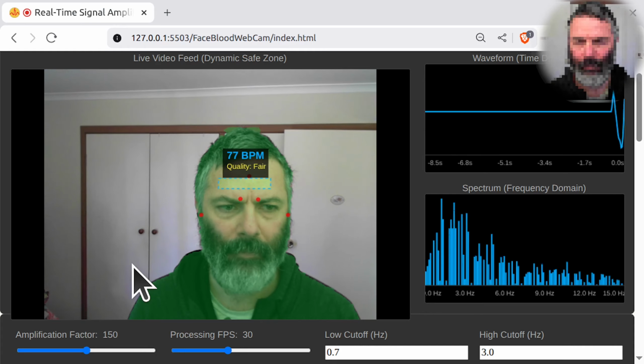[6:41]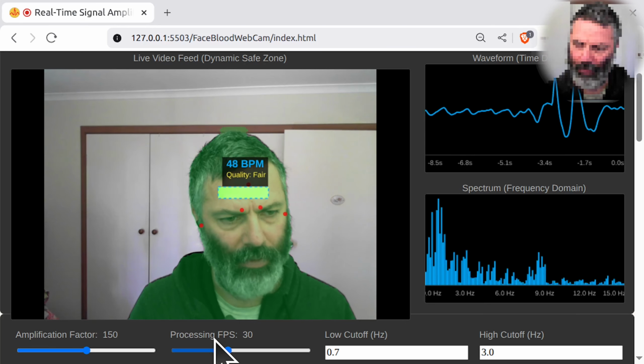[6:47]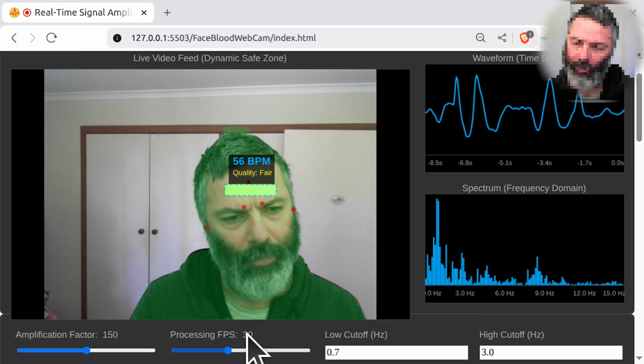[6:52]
Now the question is, what happens if the FPS is variable? So let's just check another FPS value. Yeah, why is it elevated? So we have an amplification factor of 150. That's default. Let's leave it at default. I don't think that's the problem. Then we have a processing FPS of 30, and that's working fine. We checked 15. Let's give an okay reading.
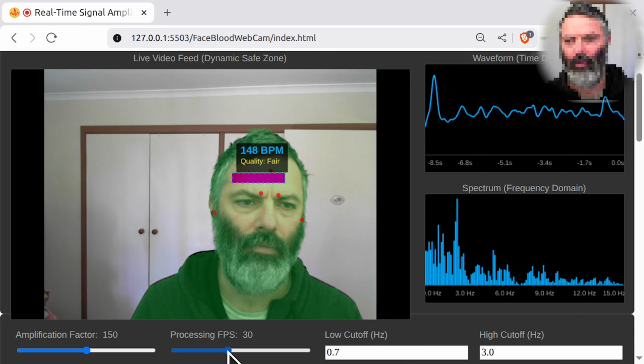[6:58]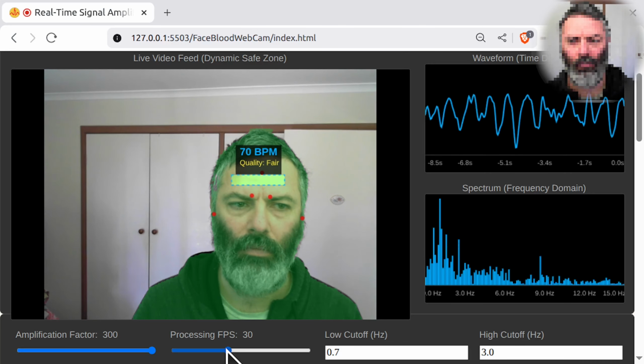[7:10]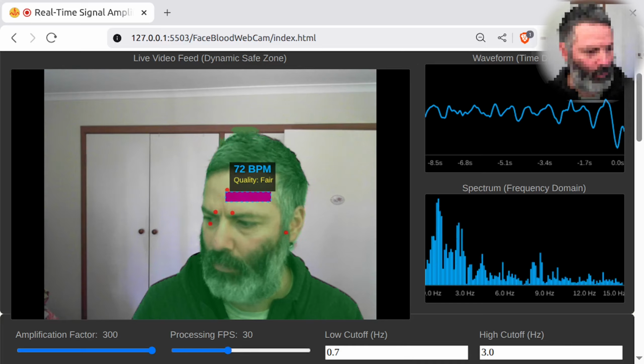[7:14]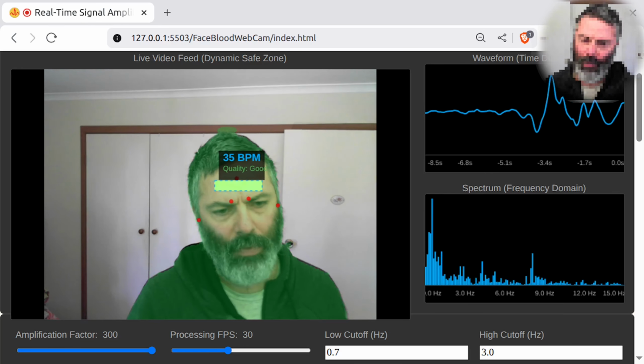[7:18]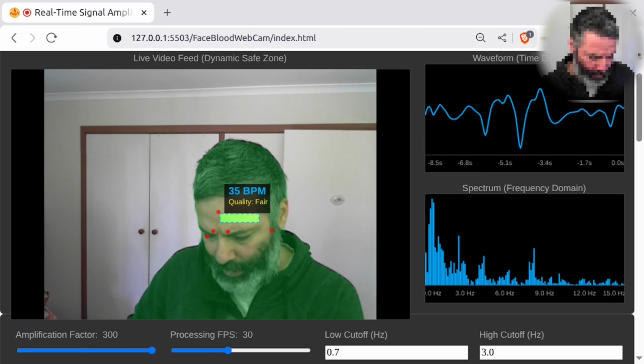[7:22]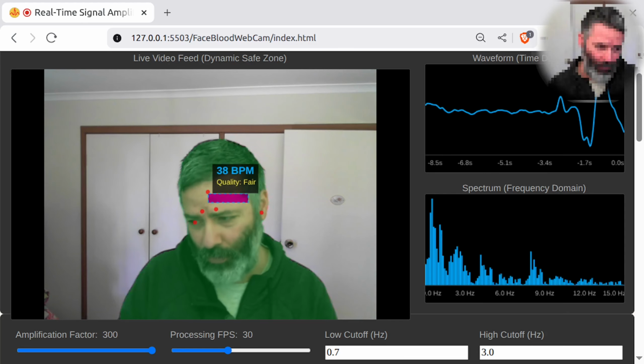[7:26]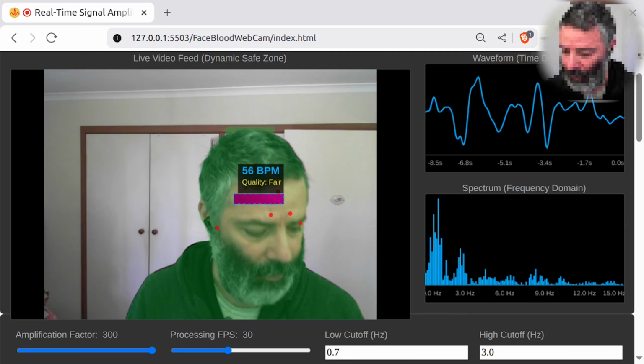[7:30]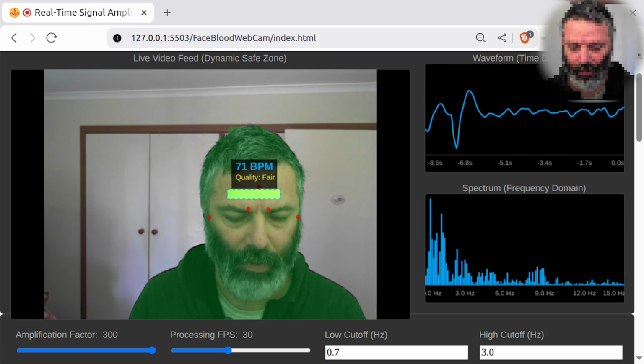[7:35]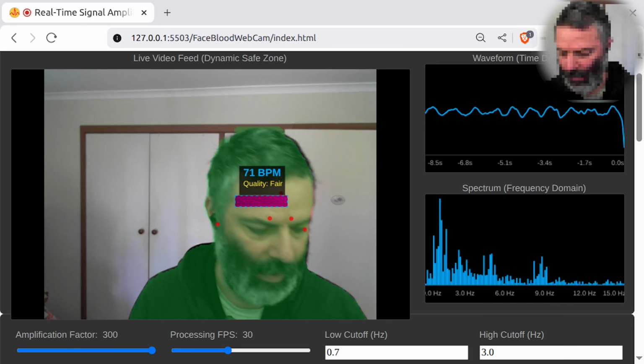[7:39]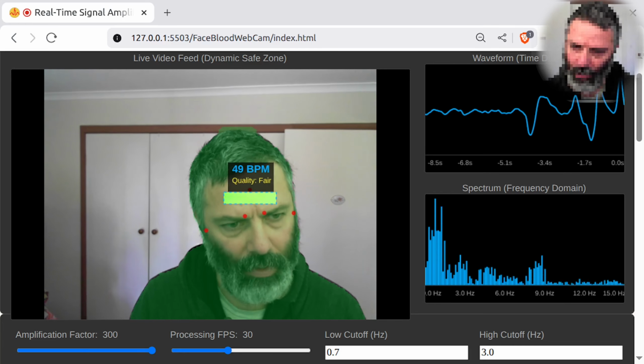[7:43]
I'm pretty sure it's 70. Compared to the smartwatch again. Hey, compared to the Garmin. Let's see what we get. The Garmin can also be sensitive if you put it on too tight or too loose, whatever. It will give you wrong readings as well. I actually stopped wearing it because it's giving me irritation. Yeah, I still get the 70. Yeah, the thing is showing me 71, so that's fine. That's okay. But then what happens?
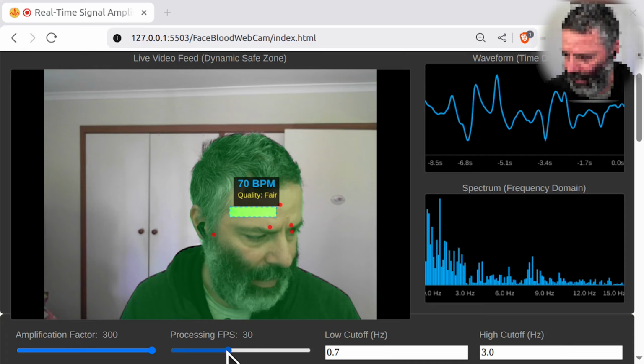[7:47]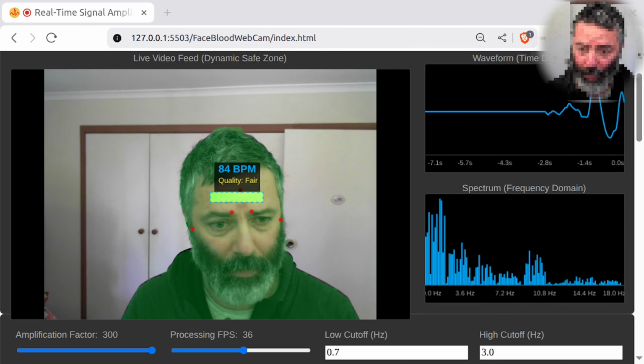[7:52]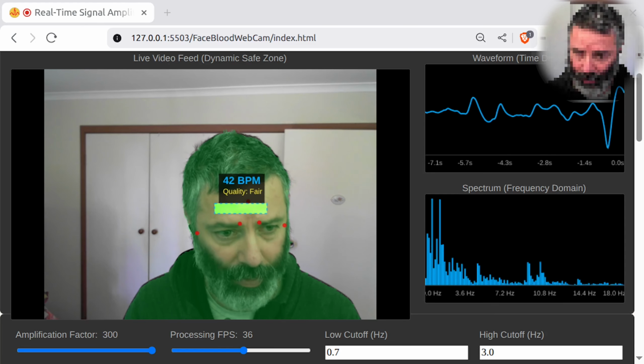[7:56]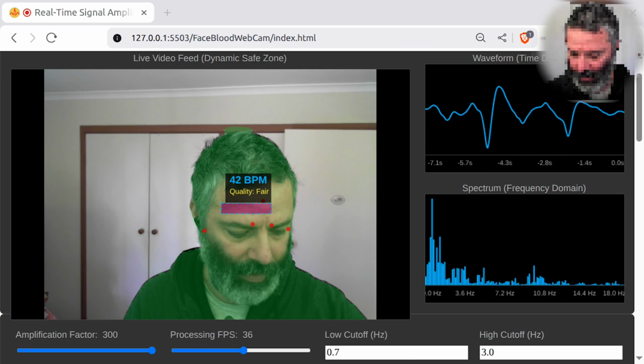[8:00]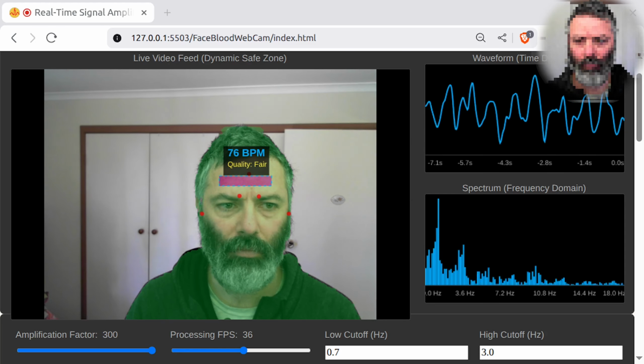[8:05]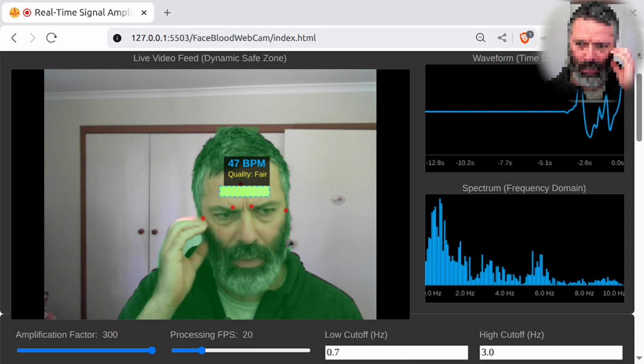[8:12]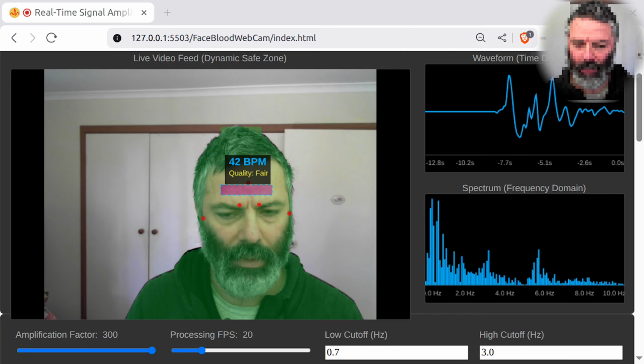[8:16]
Again, we're still testing the FPS. If we increase the FPS, whatever number there is, it should still give an accurate BPM. So it should still be the 70. No, the 76 is wrong. Interestingly, if we go to 20 FPS, I think if you go lower, it might still be working, but when you go to a higher FPS, it gives an off rating.
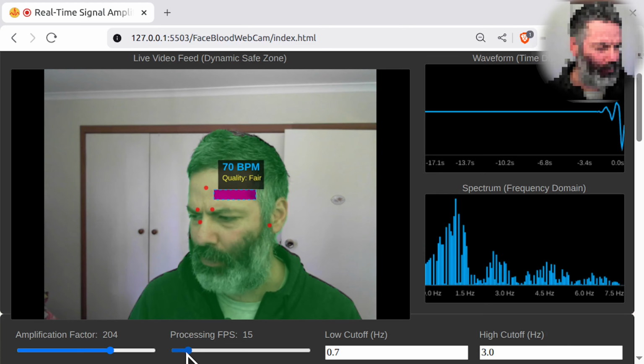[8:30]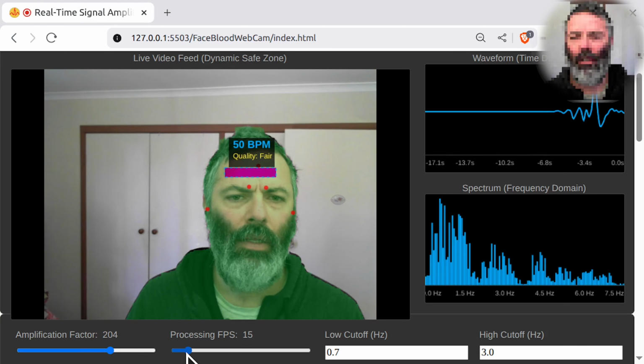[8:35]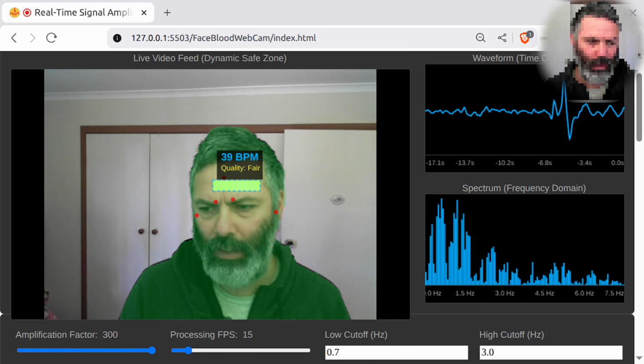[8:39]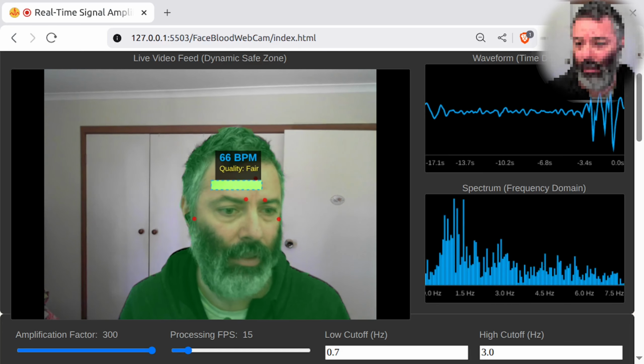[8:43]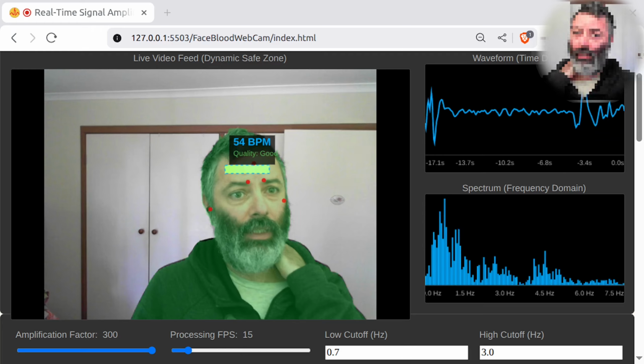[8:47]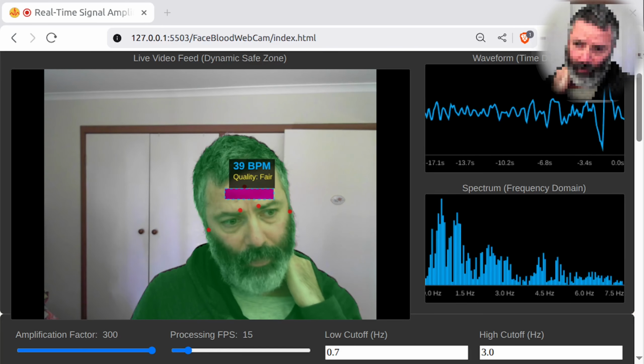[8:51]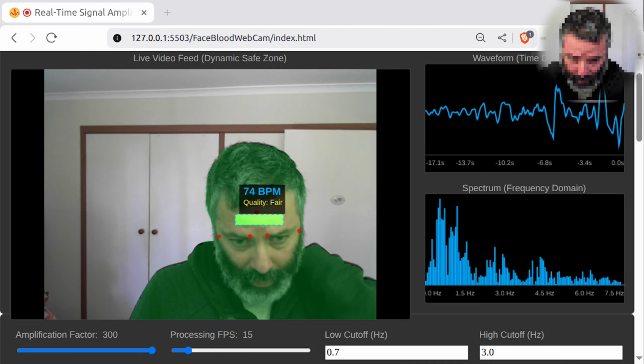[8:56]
It's like multiples of 30. Maybe just multiples of 30 work. Yeah, I'm not sure it works. It's like hallucinating. We need to actually measure the actual FPS. Like the set FPS and the actual FPS can be different, can they? Okay, so the set FPS that we want can be different from the actual FPS the system is doing.
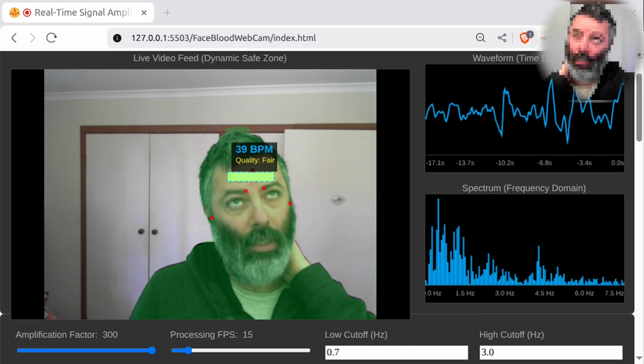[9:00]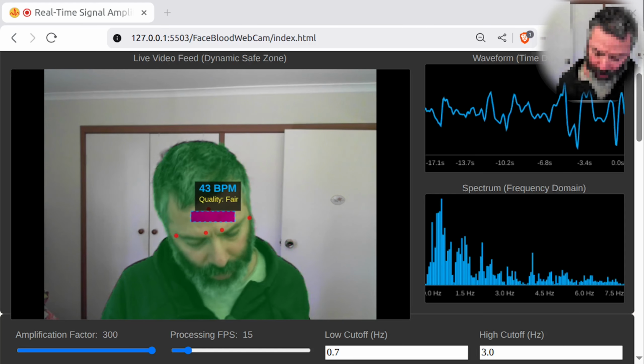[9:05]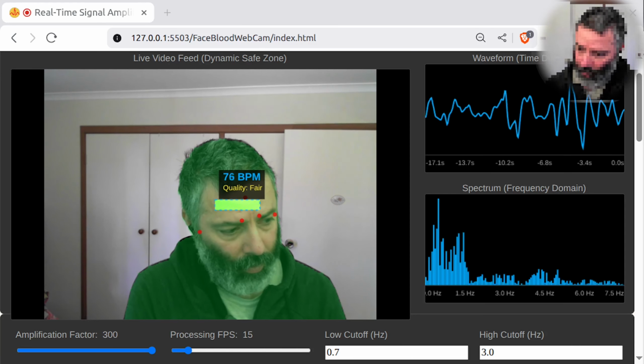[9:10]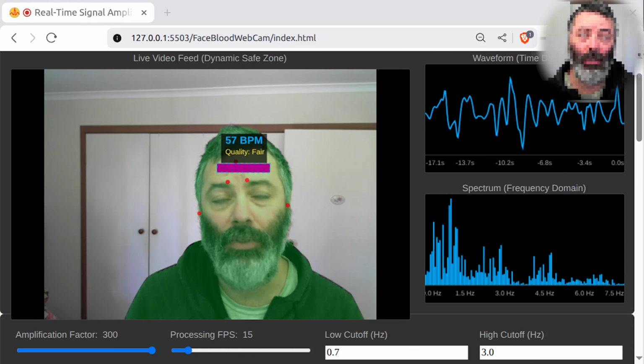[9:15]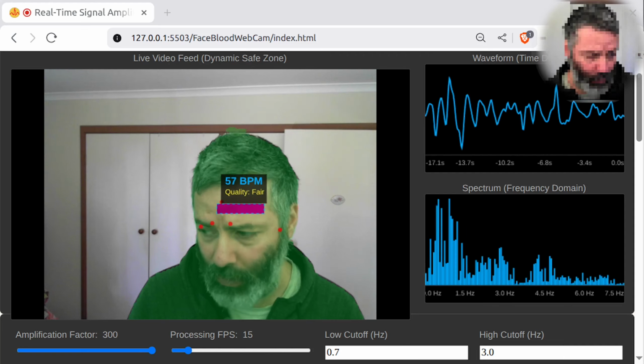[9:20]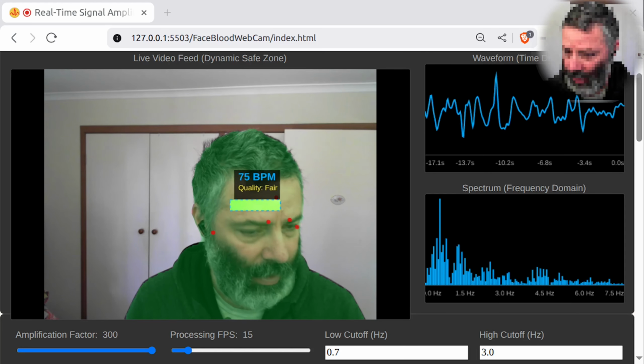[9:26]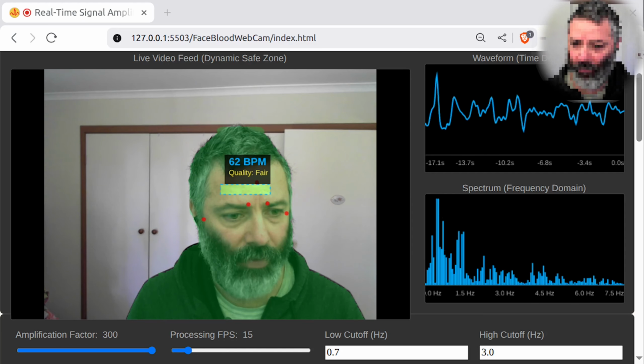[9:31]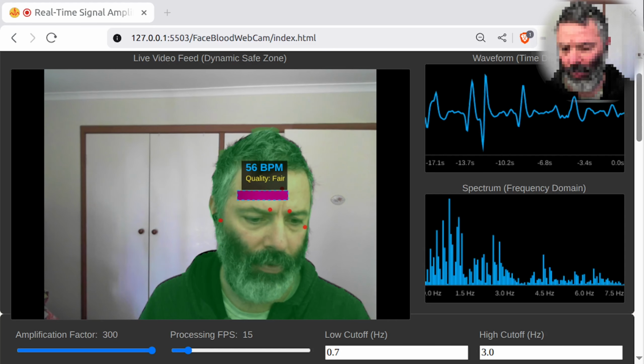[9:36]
Shall we display more information to the user? Can we actually display what the actual FPS is? Because the main reason we're doing this is that the calculations still seem to be correct, so it still seems to be only working when the processing FPS setting is set to the default 30 frames per second. Let's give it to that Gemini 3 Pro.
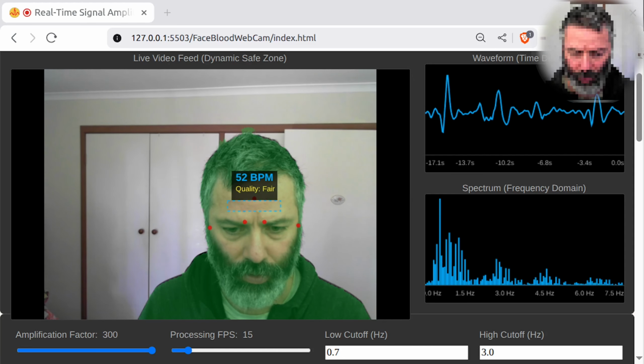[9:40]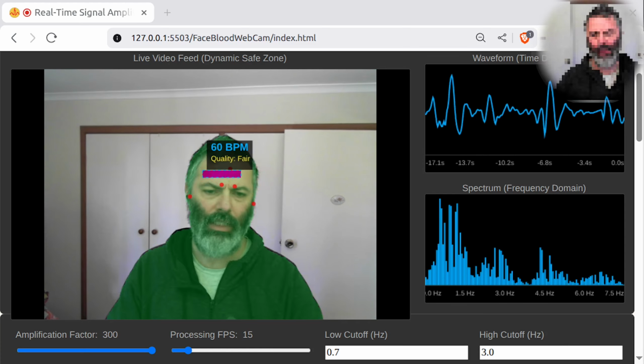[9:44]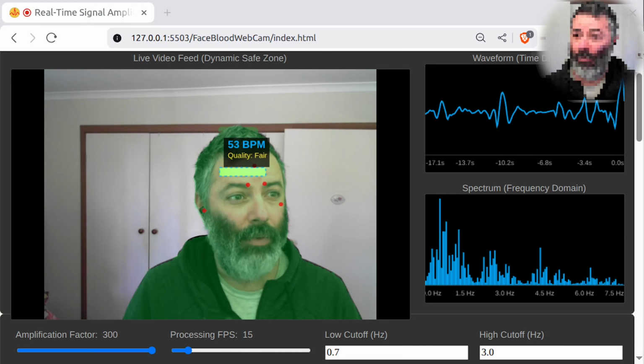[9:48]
Should we also ground it with Google search? I don't know. Let's do it. Let's do grounding with Google search, see what we get.
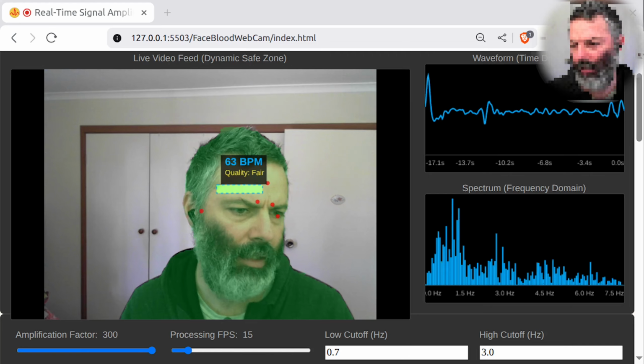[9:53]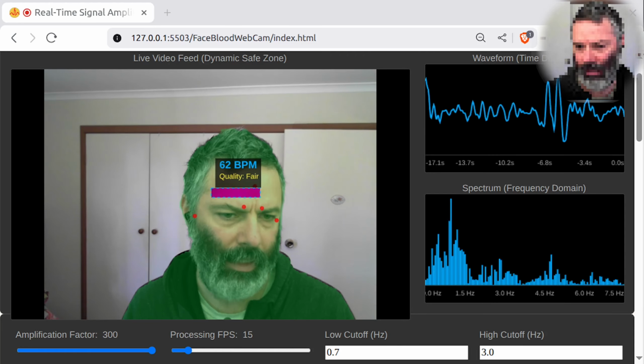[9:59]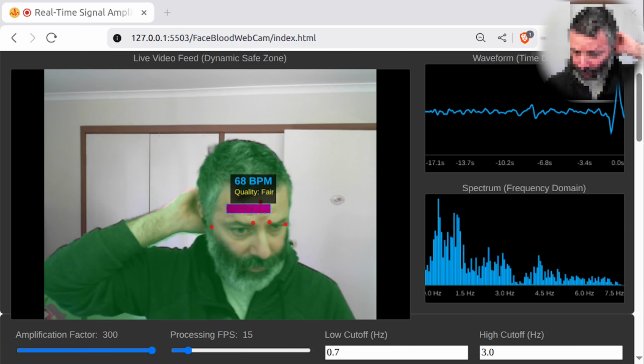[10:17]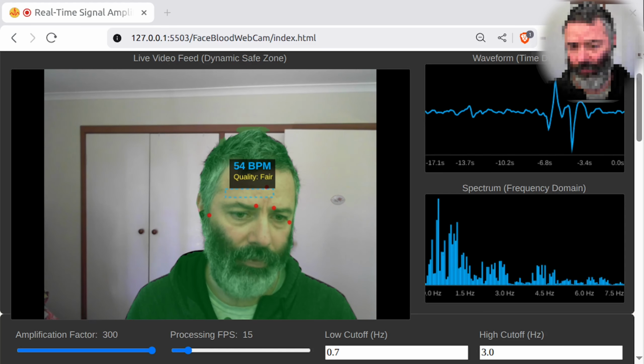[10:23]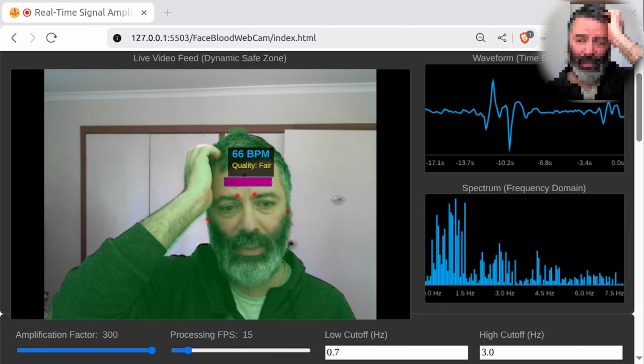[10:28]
The mathematical filter, the Butterworth implementation, calculates its coefficient based on the target FPS. However, if your webcam or computer can only physically deliver 30, the actual FPS the filter receives is half as often. Mathematically, if a filter expects data at a certain FPS but receives half, the frequency response stretches. A heartbeat of 70, which is 1.16 Hertz, 70 BPM.
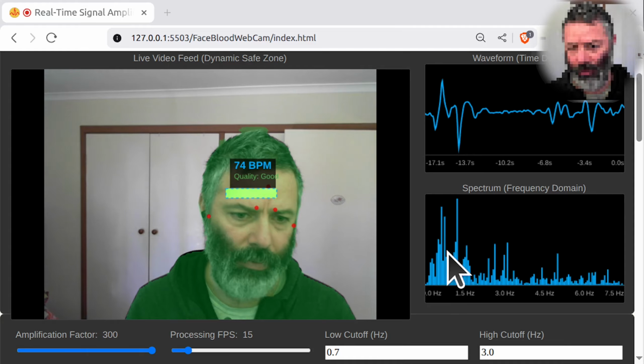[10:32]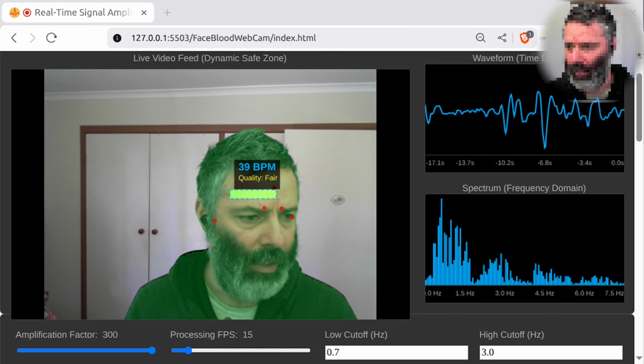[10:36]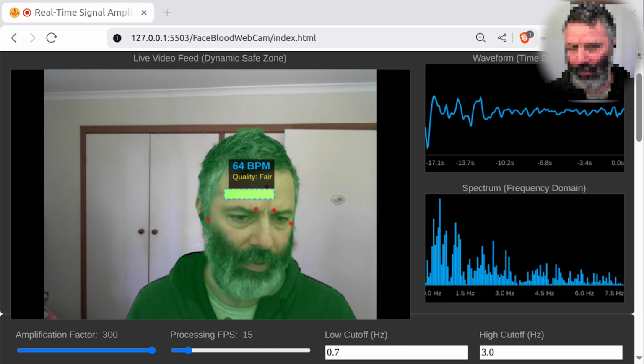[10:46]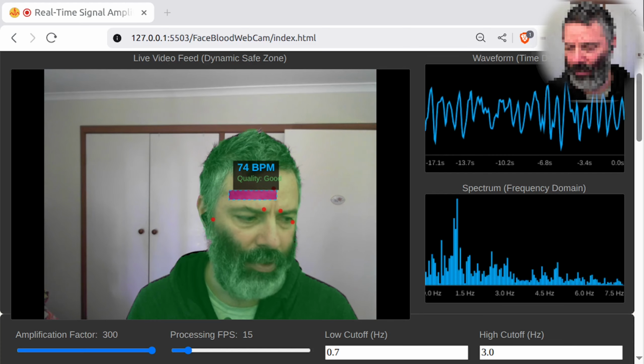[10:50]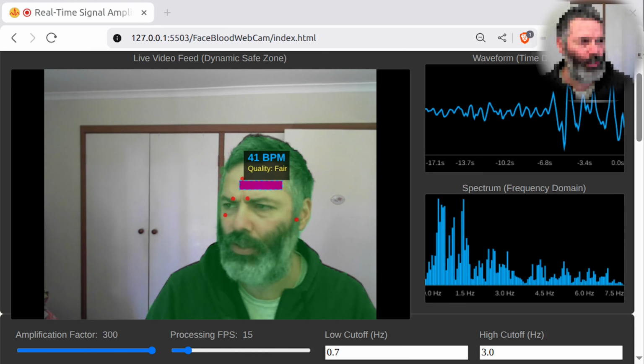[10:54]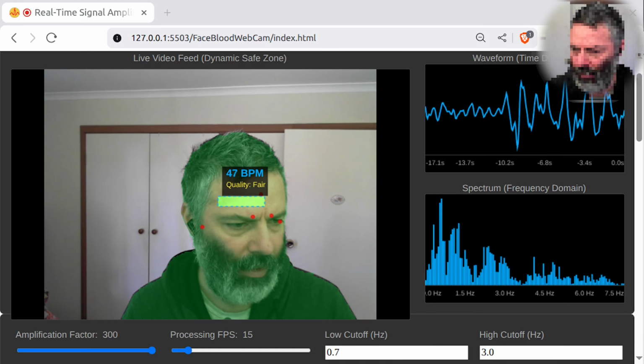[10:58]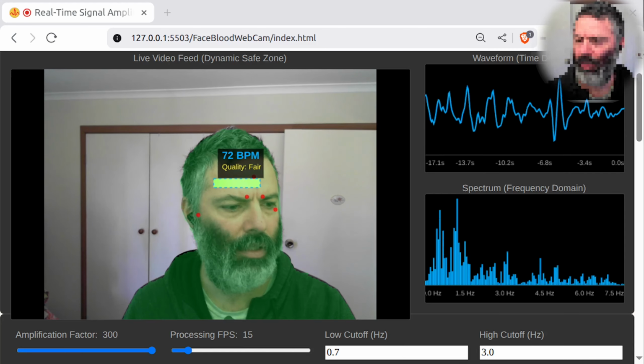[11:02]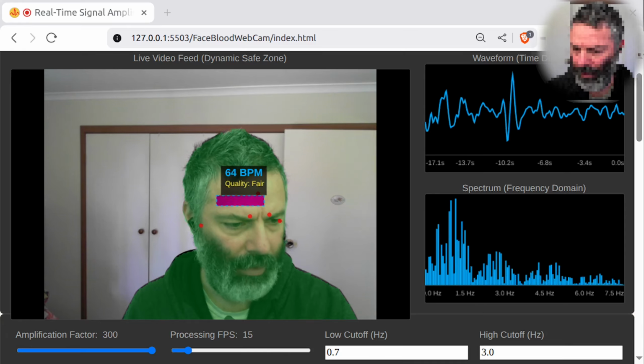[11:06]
That's what you should be seeing over there. It will be interpreted by the filter as if it were much slower. The filter's bandpass effectively shifts, filtering out the real signal. Shall we also have a toggle for the filter? Okay, now we'll have the actual number. Adjust the target slider until it matches the actual number. When they match, the math and the reality are aligned and the BPM will be accurate.
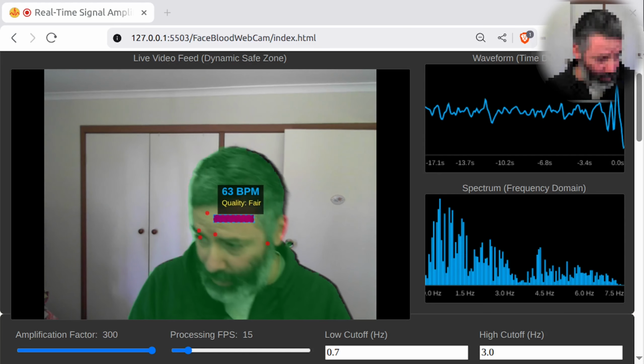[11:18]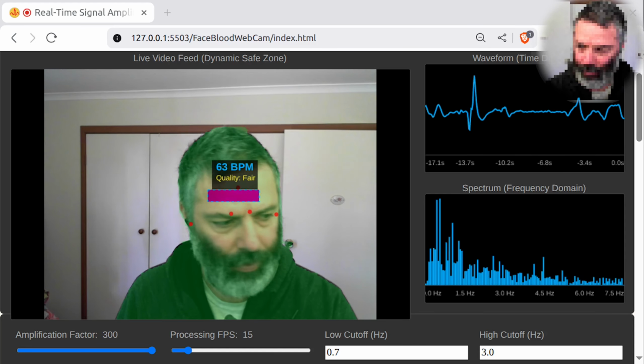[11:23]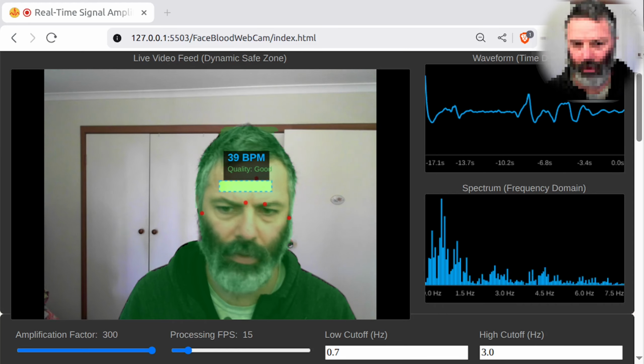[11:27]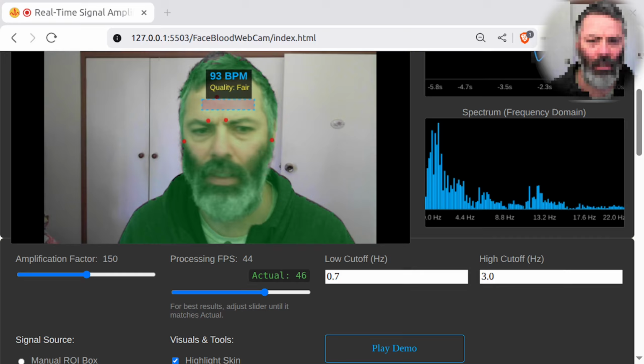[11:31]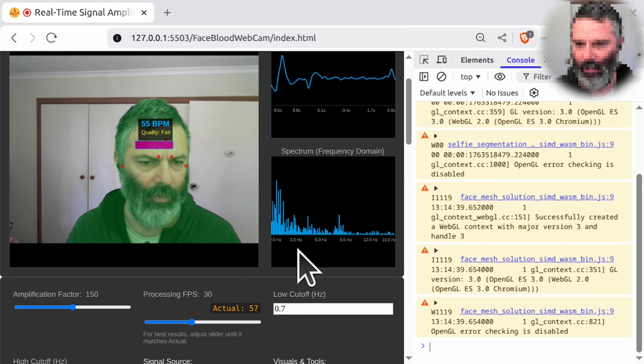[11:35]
You know, it's the common problem. Okay, so it finished the code. Let's check it out. So the actual FPS is fluctuating quite a bit.
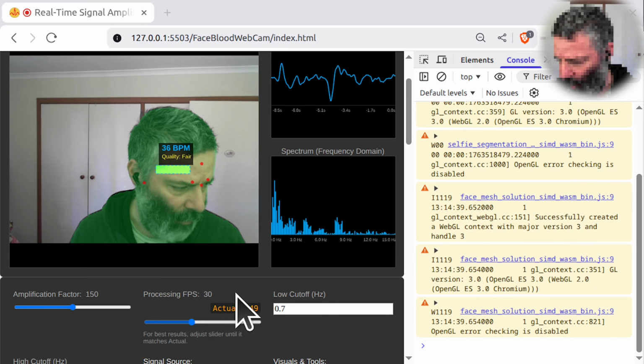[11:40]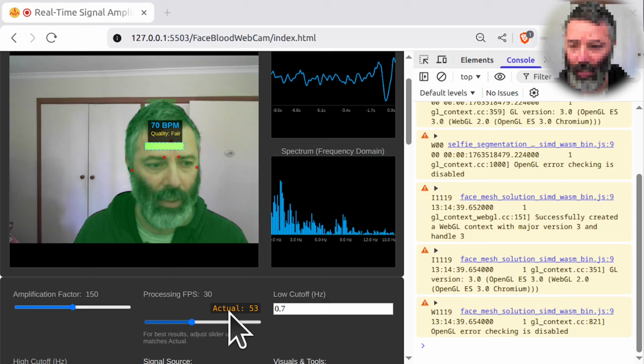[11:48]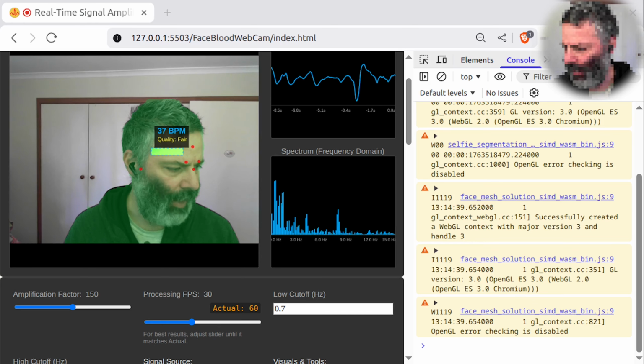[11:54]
Why do you think, if the processing FPS is set to 30, the actual is showing me 48, 58, and so on? It keeps fluctuating and it's not just limited to 30. Why would that be the case? It's going actually up to 60. I don't know why. I don't think it's accurate in the code.
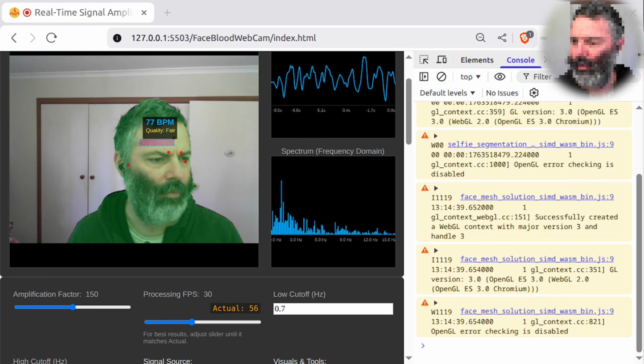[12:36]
The main loop function is driven by requestAnimationFrame. Browsers typically try to run this loop as fast as possible. The current code counts every time the loop runs, not every time the heart rate is calculated. The throttle inside the loop has an if statement to ignore extra frames. The mistake: the variable frames this second is currently sitting outside. Yep, there's some sort of problem. I'll have to regenerate the whole code.
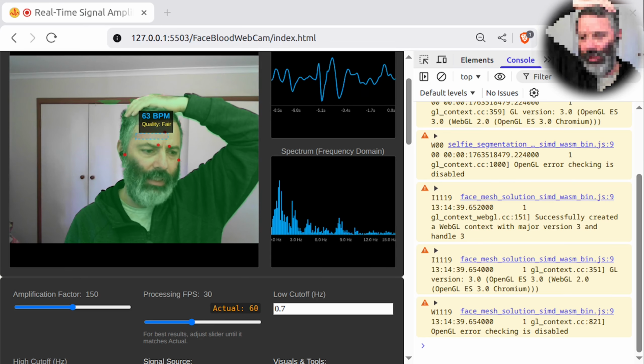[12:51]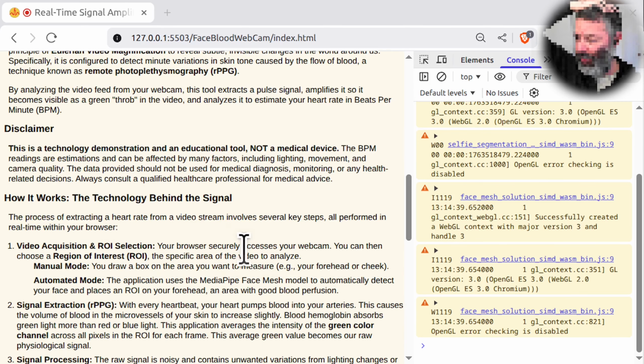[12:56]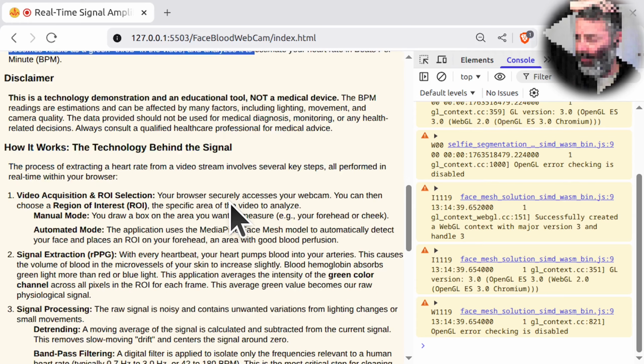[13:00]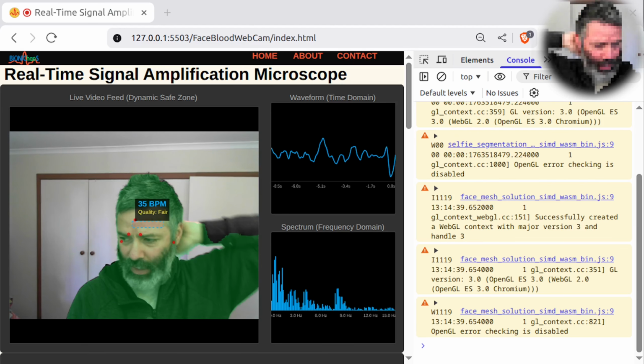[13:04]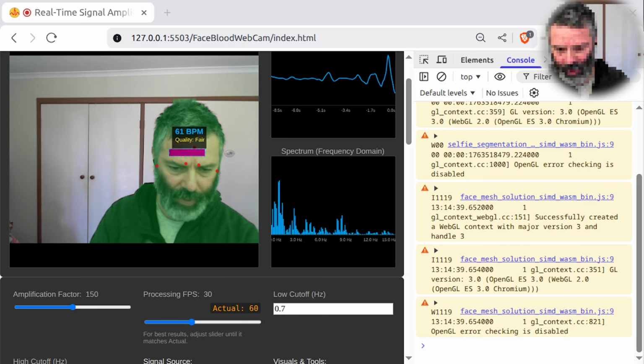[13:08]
Someone is asking, how can you estimate BPM? We'll do a summary of the chat. So we're chatting to Gemini 3 Pro. We'll do a summary and we'll include this as a question. It should be explained at the bottom of the page as well. But currently it only works with 30 FPS. We are regenerating the whole code.
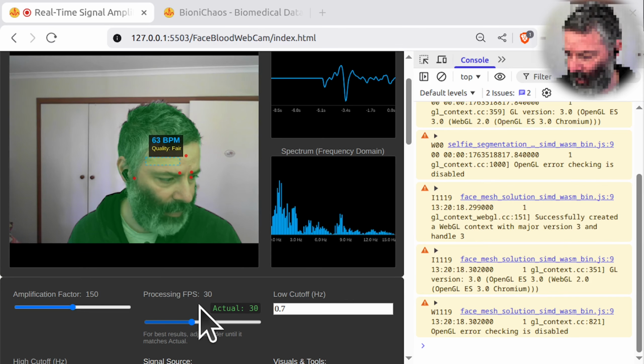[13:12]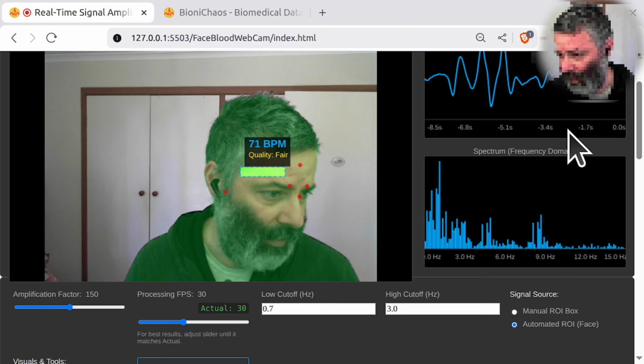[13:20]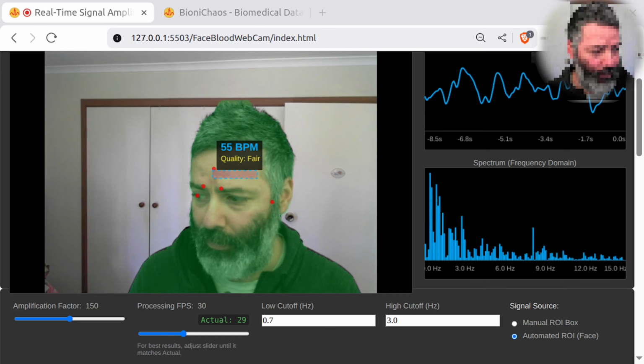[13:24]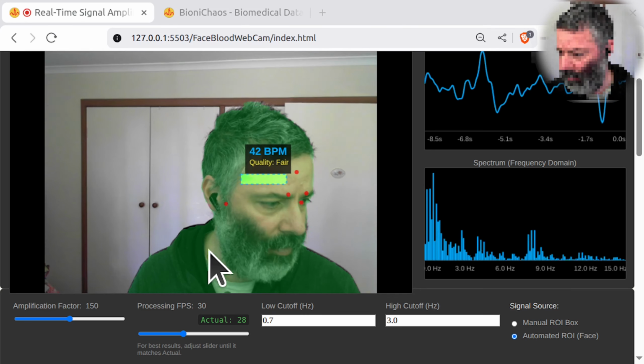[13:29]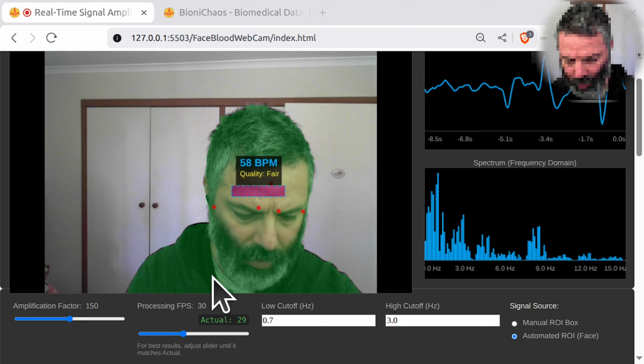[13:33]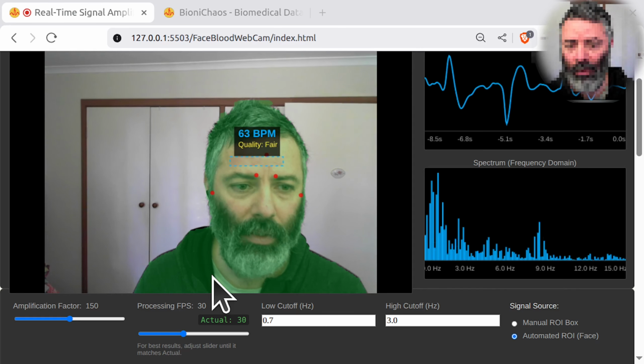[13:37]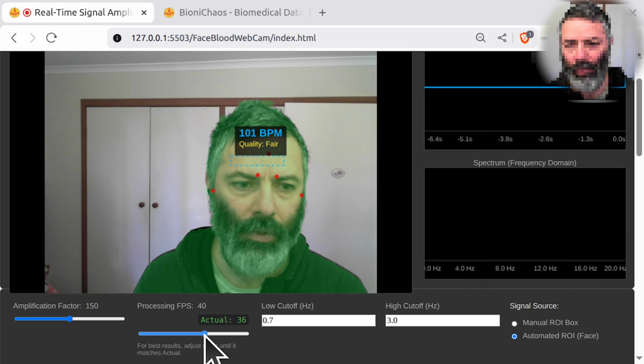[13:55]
Okay, now we have the processing FPS set to 30 and the actual is 30. Sometimes it's fluctuating to 29, but that seems to be an okay error to have. We can deal with that probably. Now, okay, let's do the reading again. Should have our 71. Yeah, that's correct. Set it to 40. Should be able to do 40.
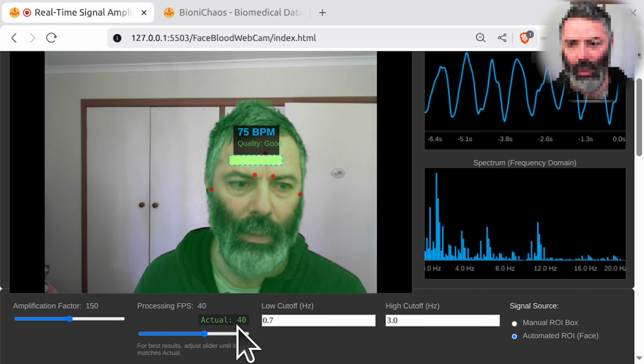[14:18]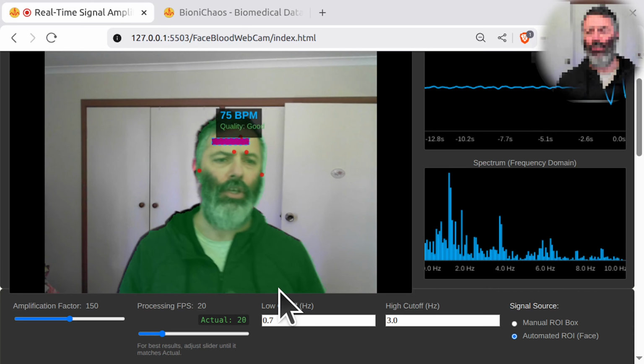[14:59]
I was doing 35. And the reading is off. It's set to 20 and the actual is 20. So that's nice because we don't need more than 20. Probably don't need more than 15 or so. We can get away with like 6. But what's worrying is the reading is off. The reading is off.
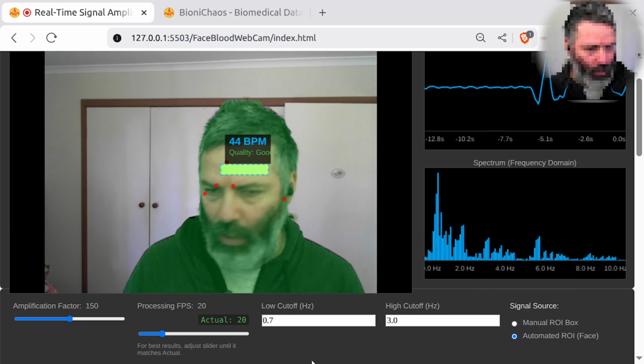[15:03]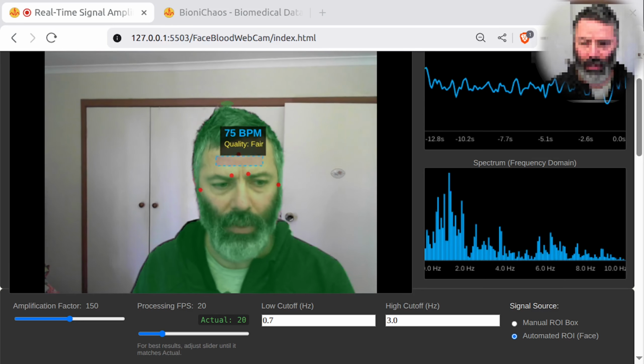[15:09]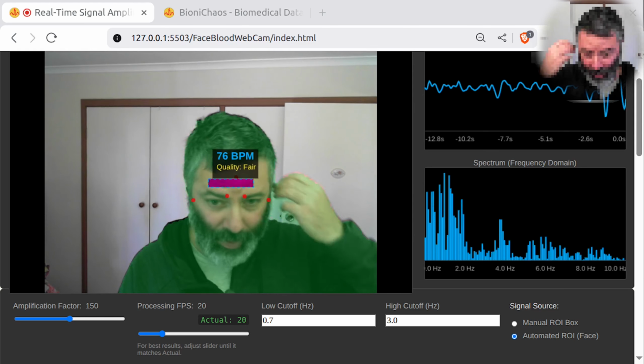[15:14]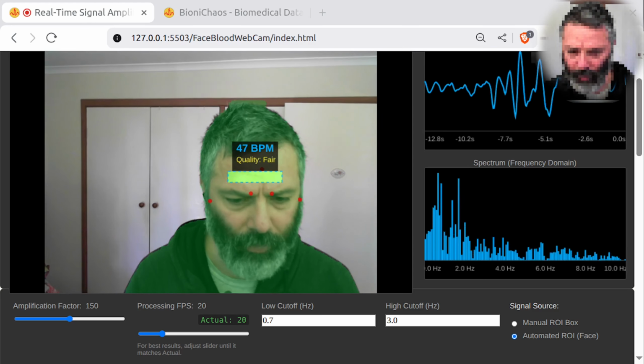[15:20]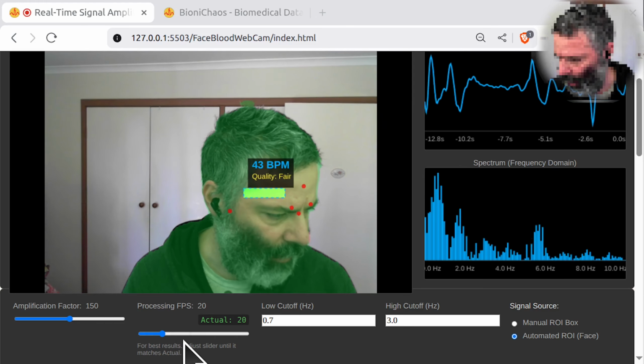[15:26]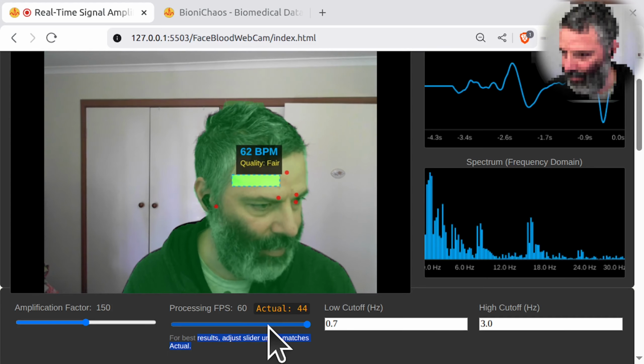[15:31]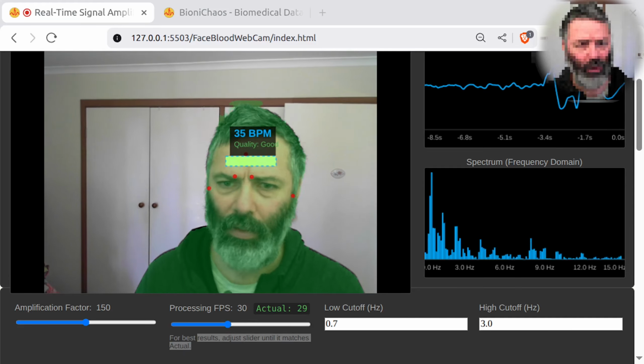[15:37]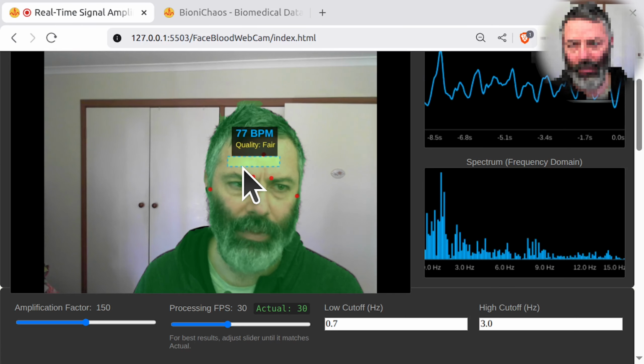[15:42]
Any ideas how to fix it? Should we have a toggle for the filter as well? We'll have to explain the problem in a different way. I don't know what's wrong, but it's good to have the actual FPS. Can it do 60? No. And that's okay, we don't need it. There's something wrong when switching potentially as well. So it's not doing what we set it to be. Yeah, it's giving the 70 reading.
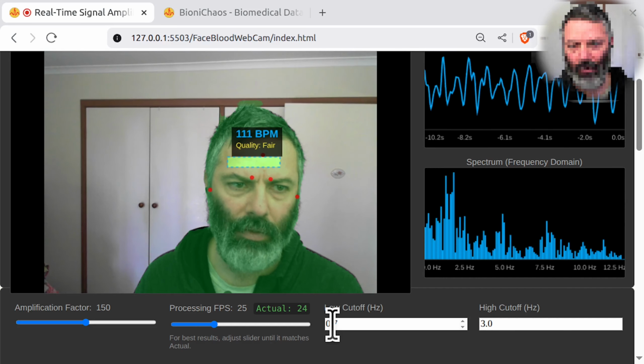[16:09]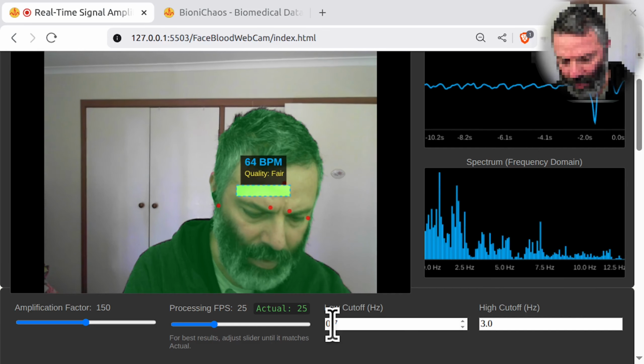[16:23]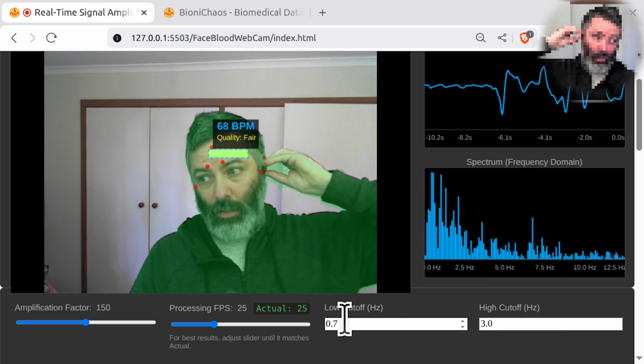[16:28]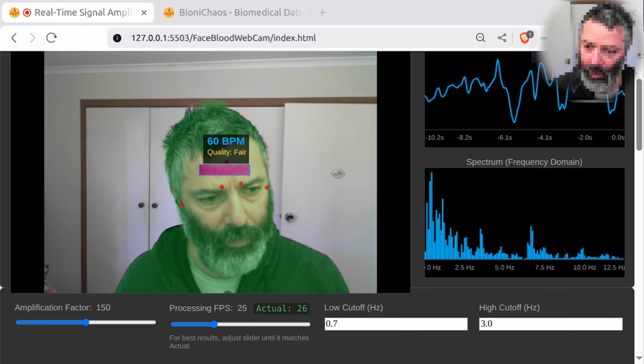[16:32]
If we set 25, actual is 25, so that should have no trouble matching it. But the reading is off. It should not be 76. It should be 71. We are having trouble.
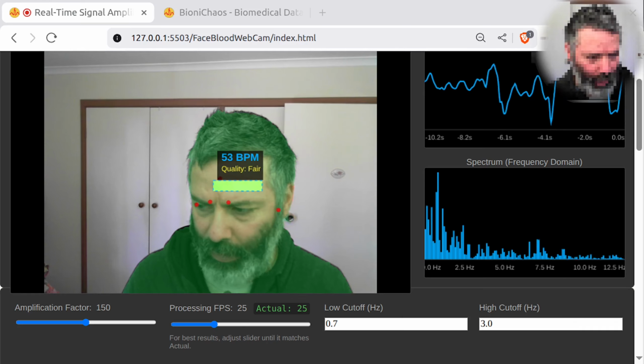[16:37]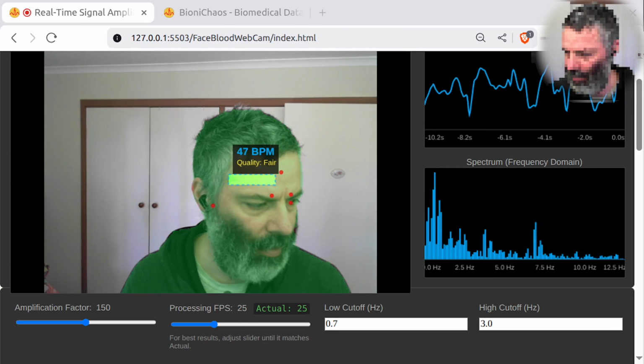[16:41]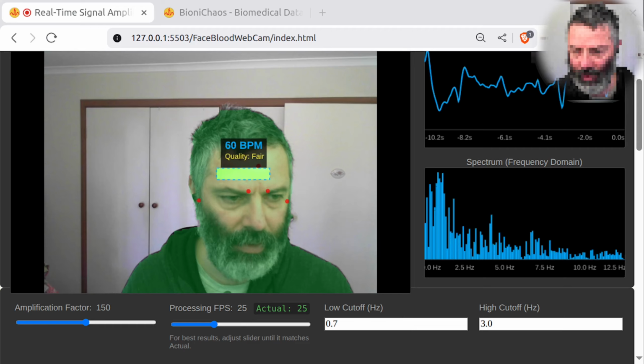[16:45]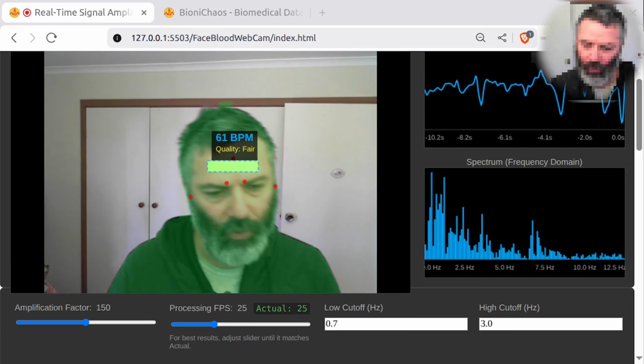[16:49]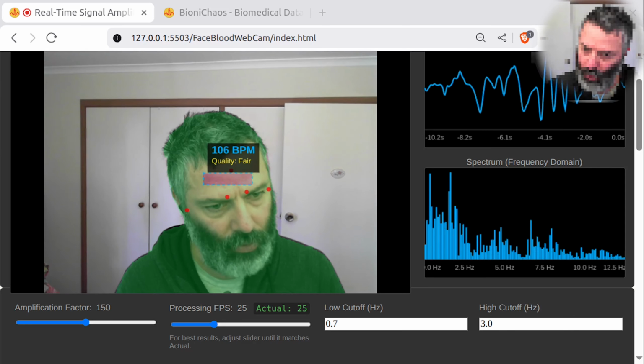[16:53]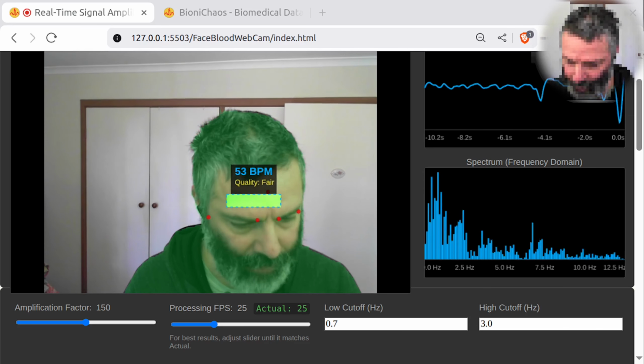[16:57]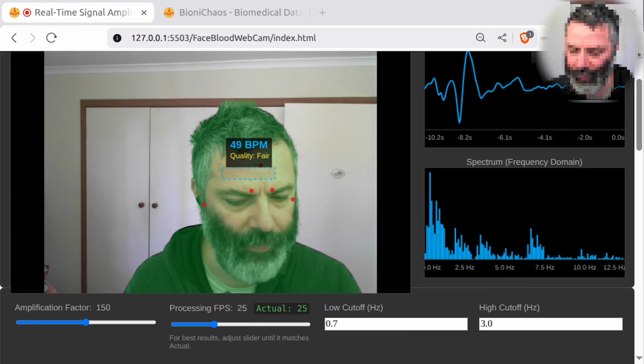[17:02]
Okay, so this is working great. Keep everything as is, but we're having one problem. When changing the FPS from the default 30, the calculated beats per minute is not correct anymore. Shall we also try and have an option to turn the filters off, another toggle for it?
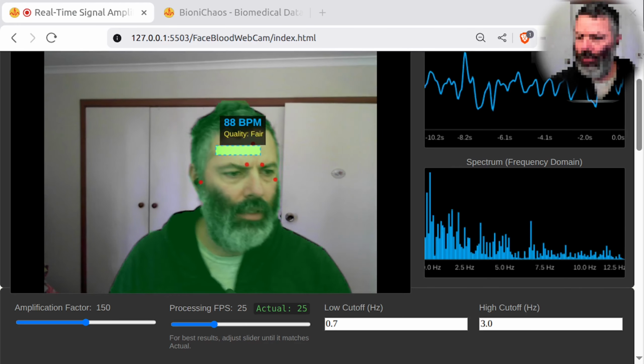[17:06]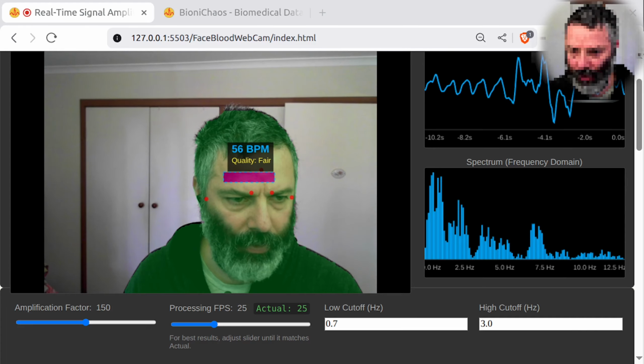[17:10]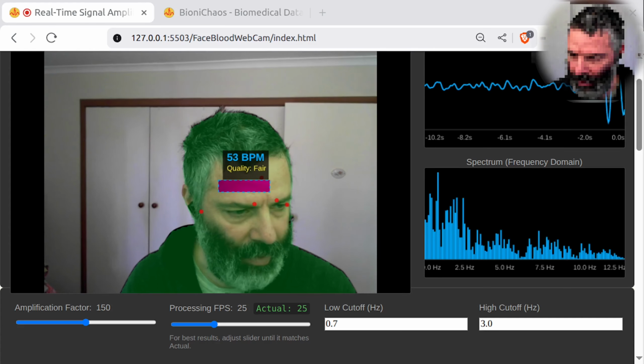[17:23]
Okay, this is the correct approach. The issue with the BPM being incorrect at 60 FPS when your camera might only be doing 30 is that the FPS math calculates frequency based on targets. No, that's the actual rate. I have made 2 changes. That's actually not a problem, but never mind.
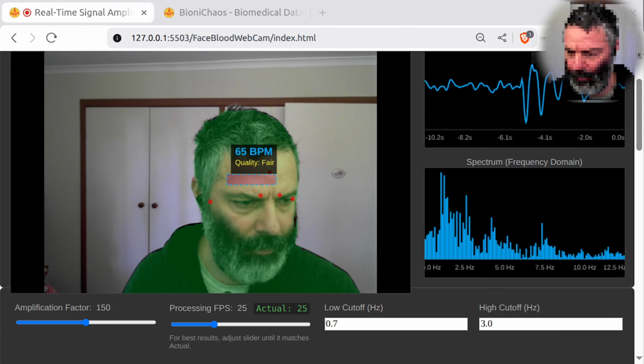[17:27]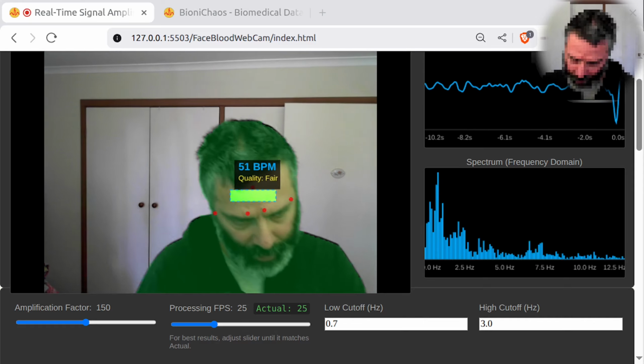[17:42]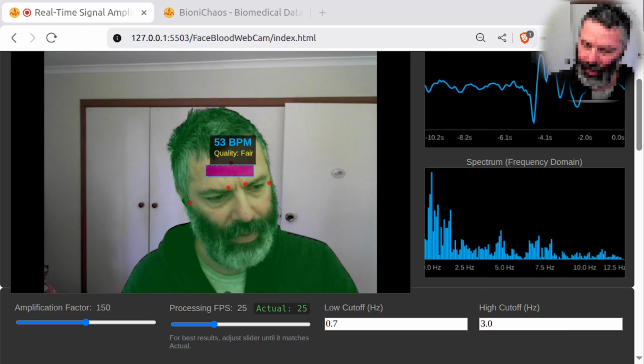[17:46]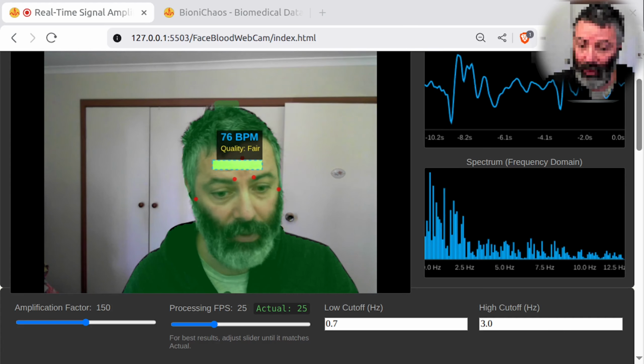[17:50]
Added the disable bandpass filter toggle. Yep. Fix the BPM maths. The graphs and BPM calculation now use smoothed actual FPS rather than the slider setting. This ensures that even if you set the slider to 60 but your computer only handles 30, the math adjusts automatically and the BPM remains accurate. It actually sounds really convincing.
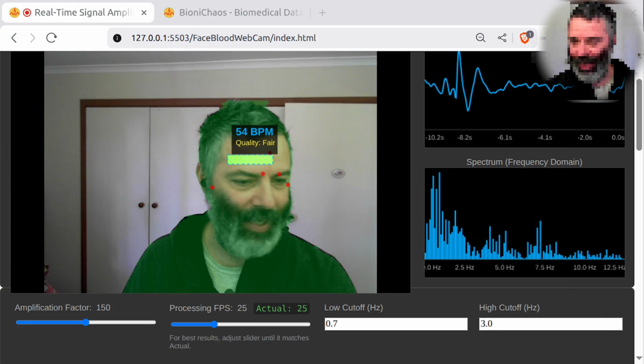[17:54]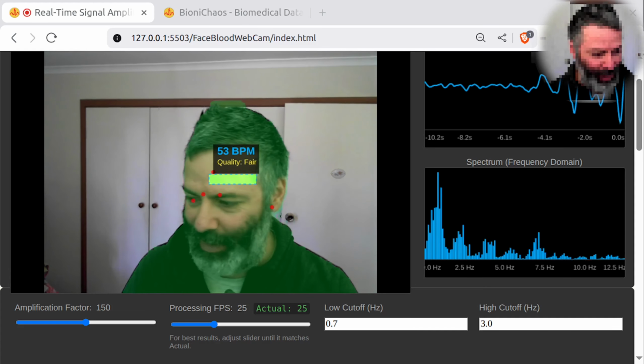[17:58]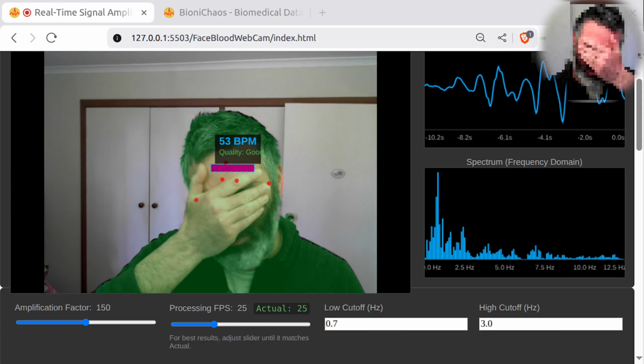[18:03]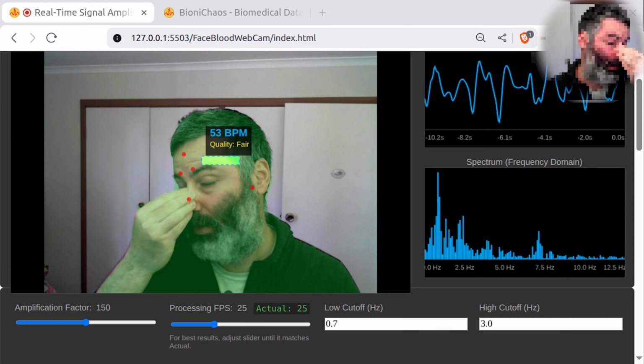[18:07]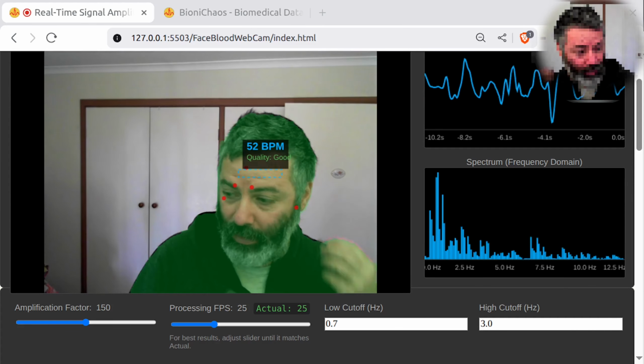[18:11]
And I'm some sort of expert in this stuff, so it's able to convince me. But then the question would be, would it be able to implement accurate code? I believe it would. It's using the best model out there.
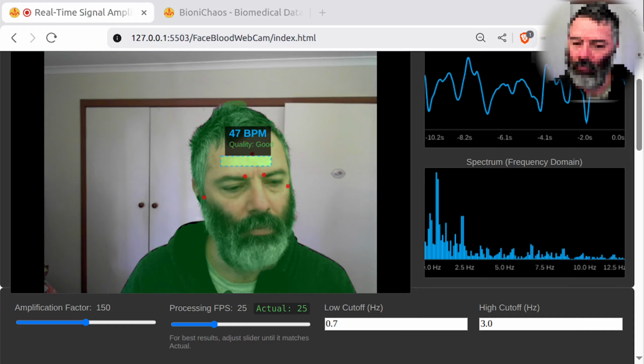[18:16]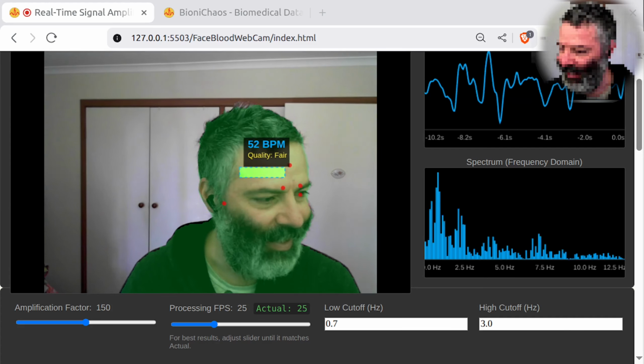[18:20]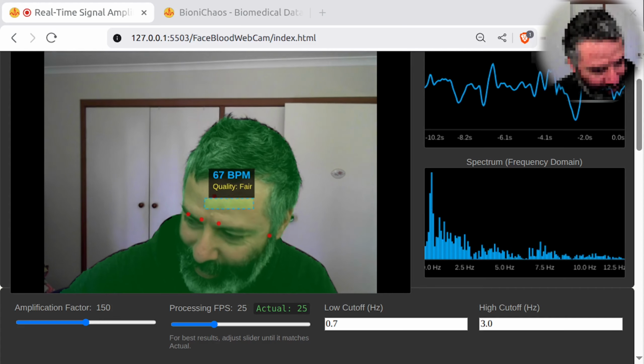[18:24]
Someone is asking me if I'm human or something. Yeah. Like if you have to ask that question, what difference does it make? You wouldn't know the difference anyway. So why does it matter?
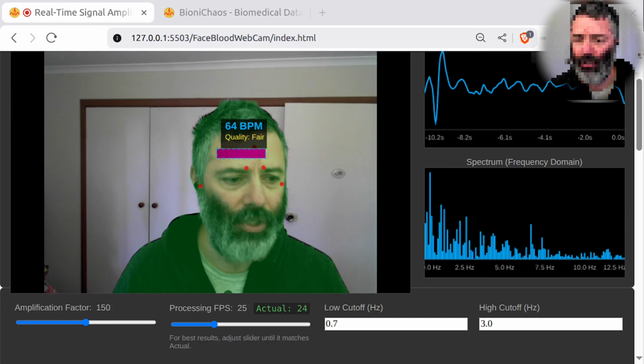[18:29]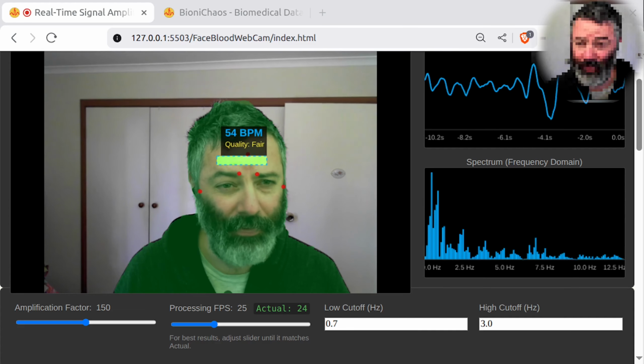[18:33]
Okay, so it made changes to the code. Currently we have 855 lines. The new version has 775. Okay, that's a bit suspicious. That's a bit suspicious. What did you get rid of?
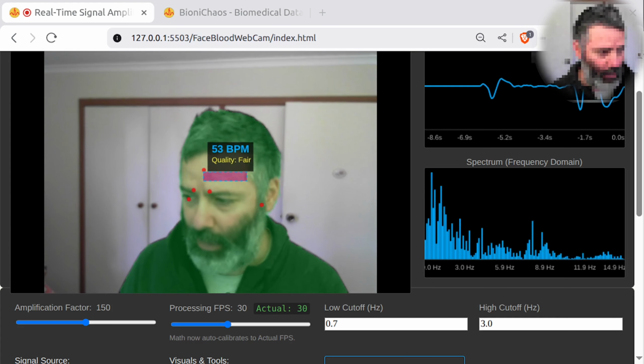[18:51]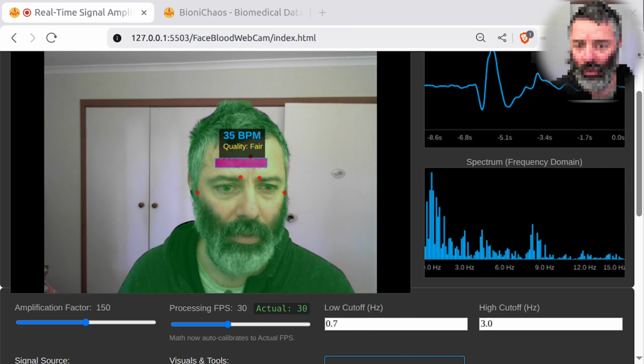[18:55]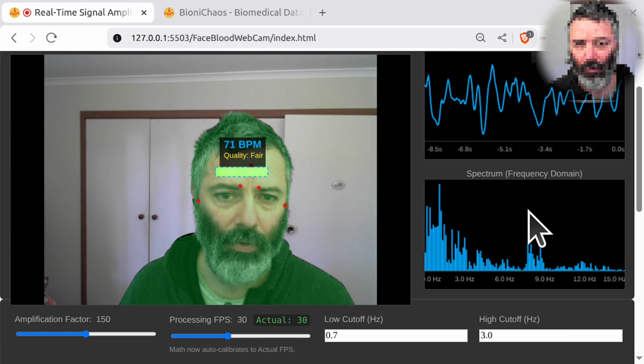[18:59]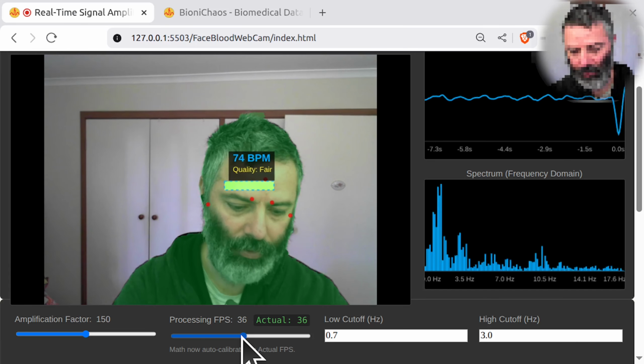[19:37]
Okay, let's test it again. Test it some more. To test, retest, test again. Okay, so doing 30. That's the default. Okay, still getting us 70, whatever. 69, 70. 36. 72. That's correct.
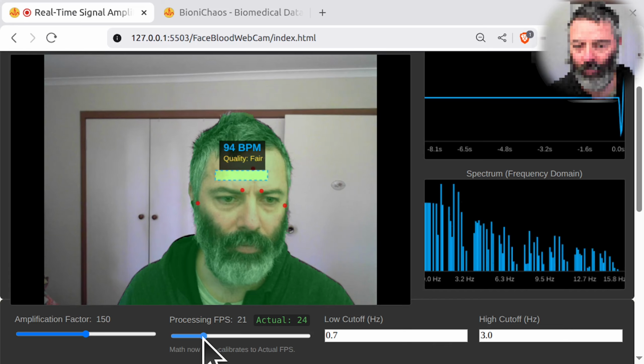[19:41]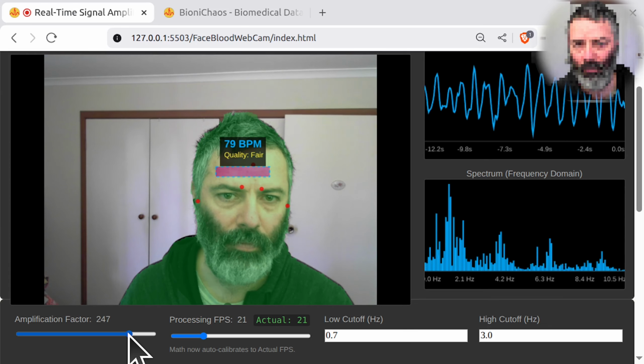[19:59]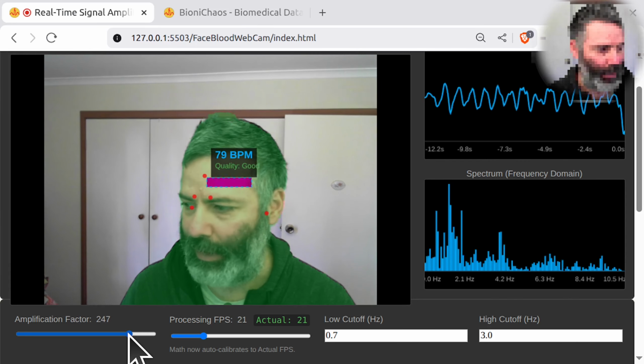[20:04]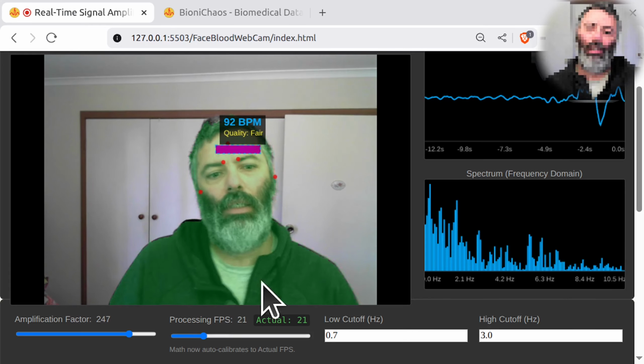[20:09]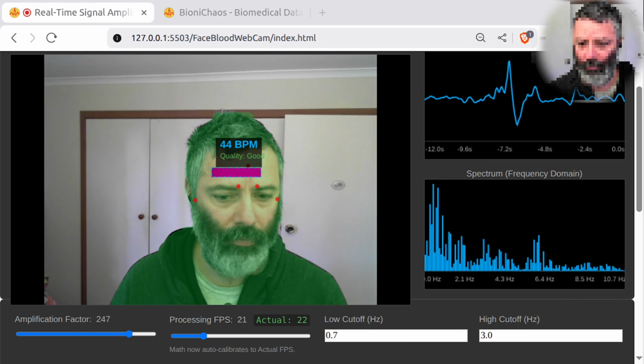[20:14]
Let's do 21 FPS. Should probably just limit it at 20 or so. No, so that's incorrect. The reading is incorrect. Any ideas? Anyone? Mueller? Okay, I'm lost.
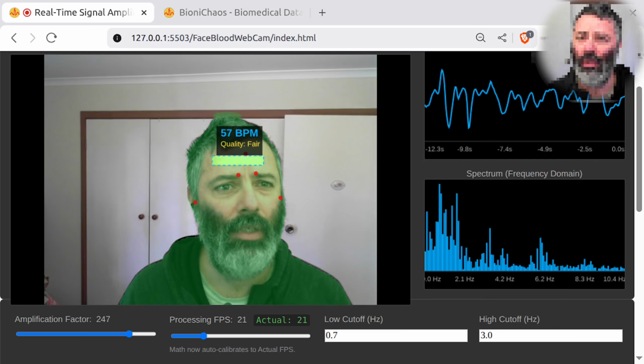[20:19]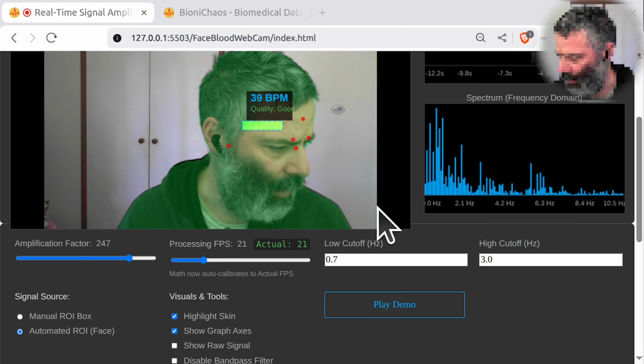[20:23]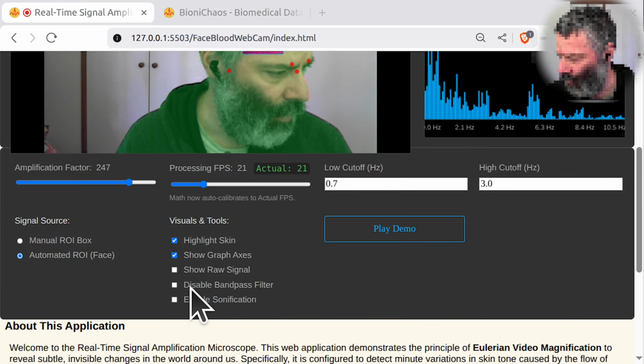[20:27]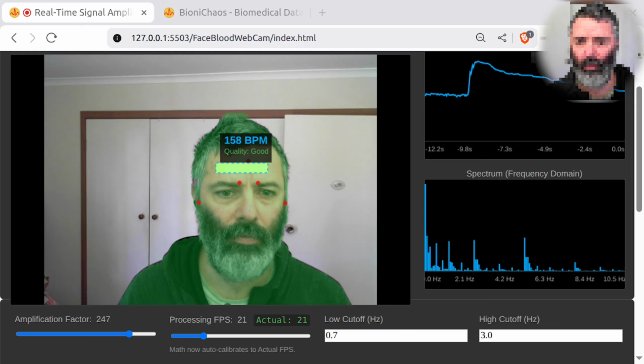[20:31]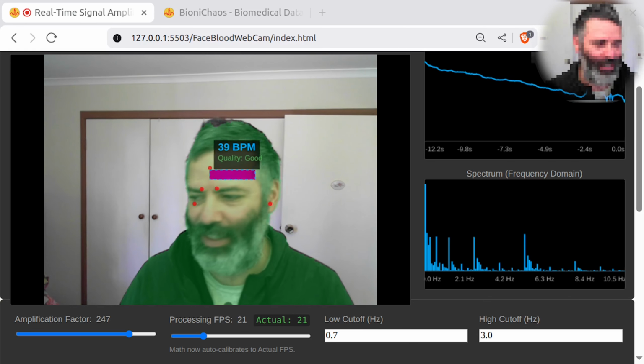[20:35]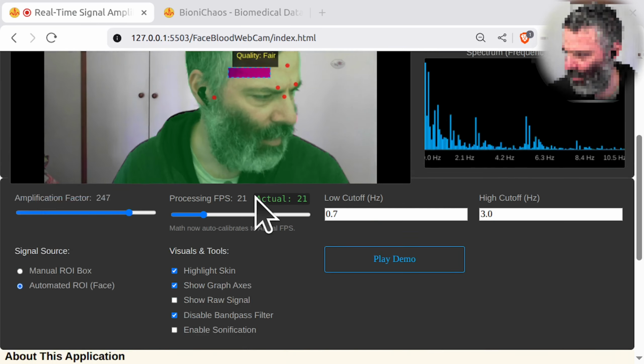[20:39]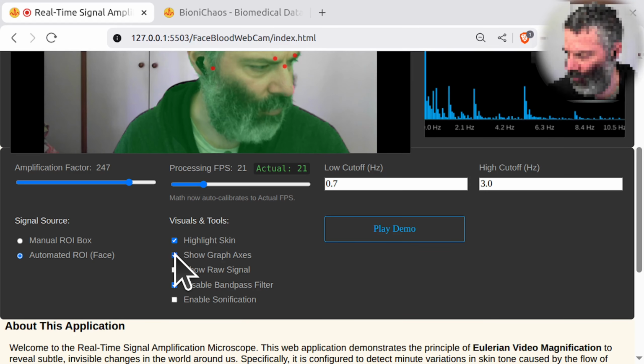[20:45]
I don't know what to do. Wait, we should have had the filter. Disable bandpass filter. No. Okay, obviously that stopped working as expected. That's not good, is it? Disable bandpass. Can show the raw signal.
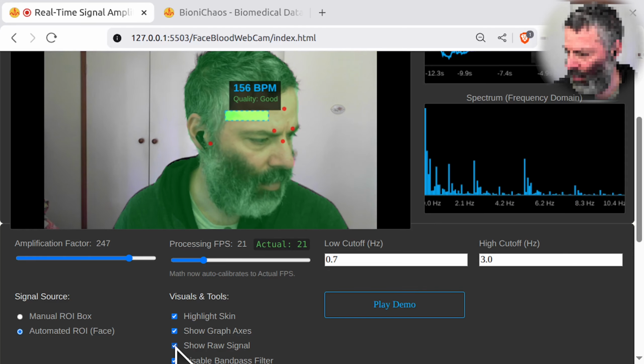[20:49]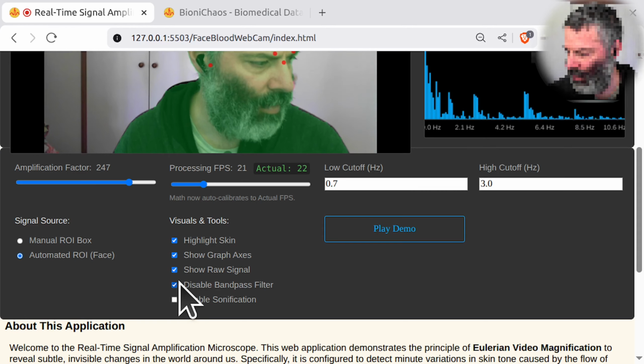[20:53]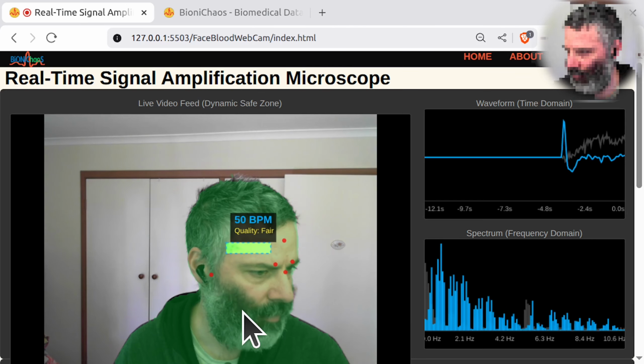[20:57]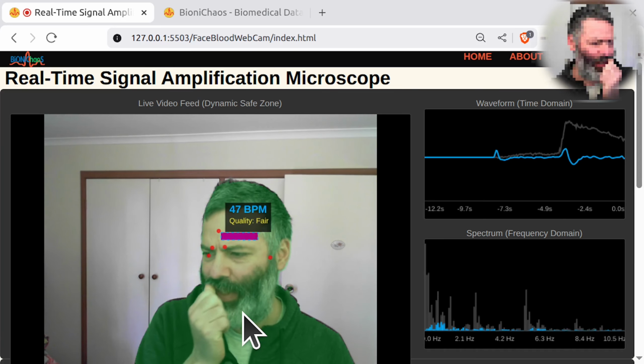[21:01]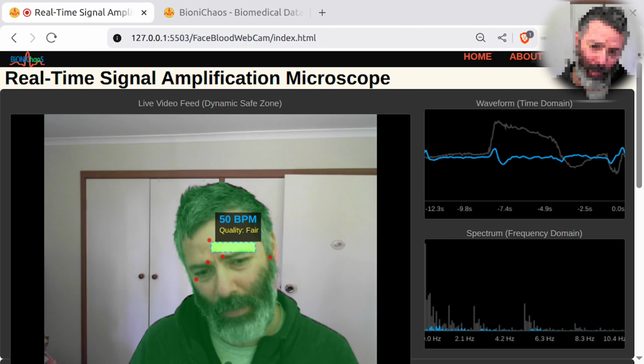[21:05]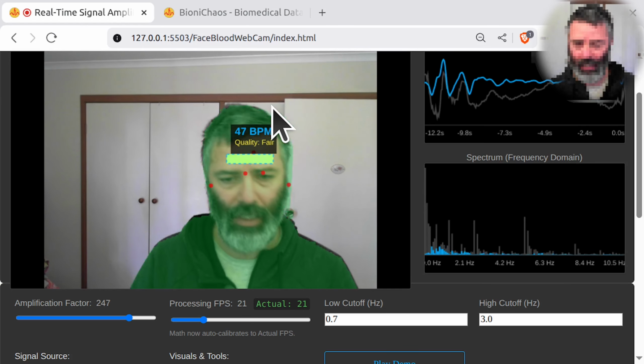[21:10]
Are they two filters? We should be disabling them separately, the high pass and the low pass. But yeah, we're still having the same problem with the FPS calculations. Something wrong that the FPS is not being taken into account.
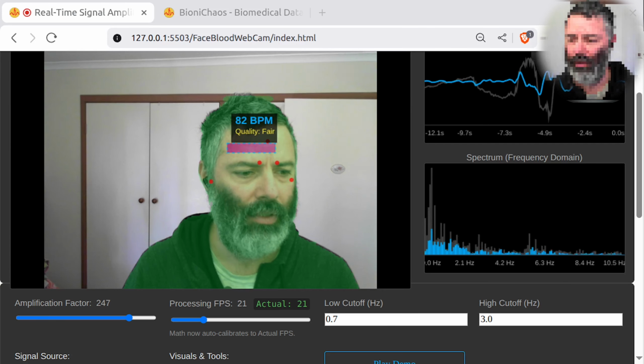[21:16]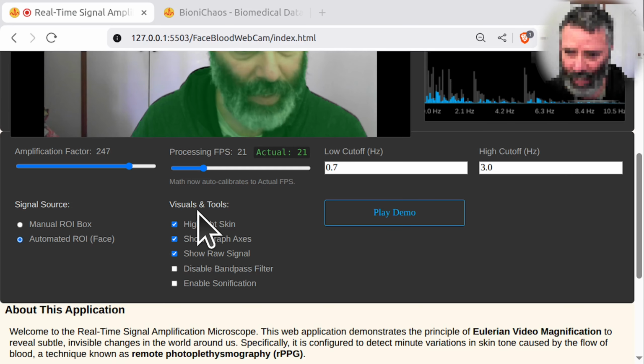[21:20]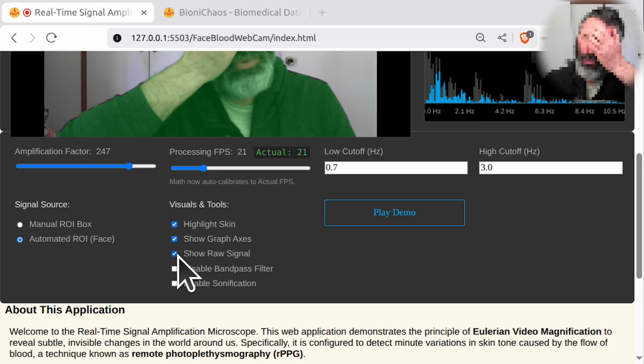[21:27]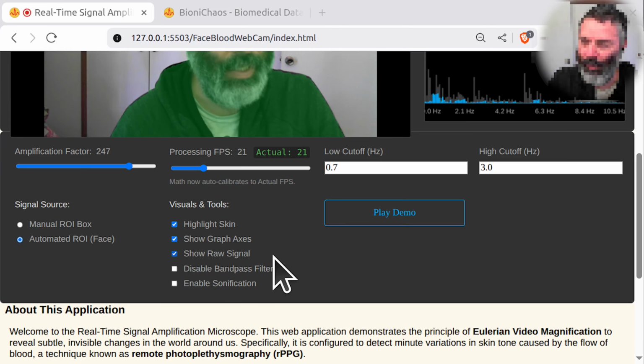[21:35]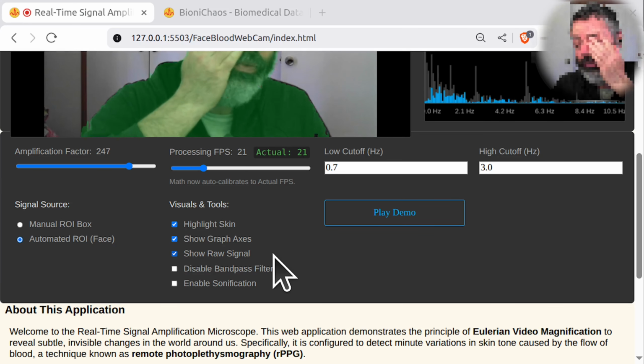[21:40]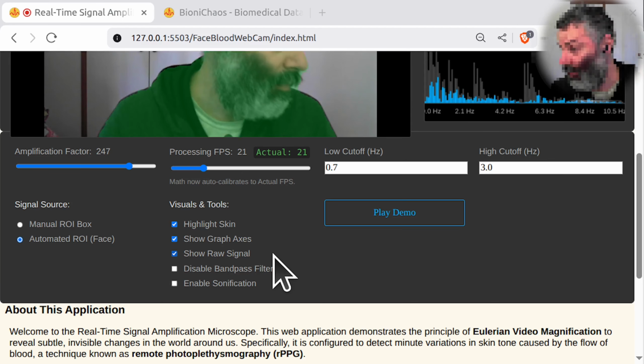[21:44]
Okay, first of all, for disabling the filters, can we have separate toggle buttons for the low pass and the high pass? And we would actually like to keep the high pass on by default and the low pass off by default. And the main issue, the reason we keep making changes, is because the BPM calculation is still wrong.
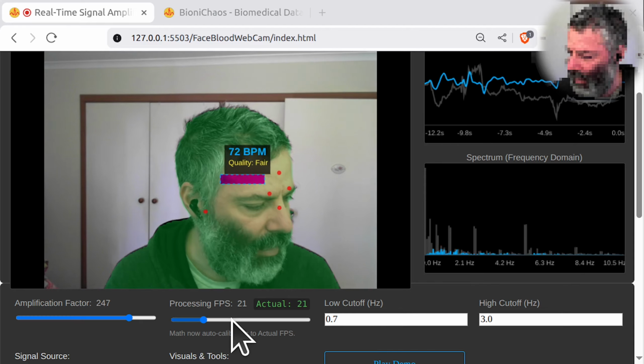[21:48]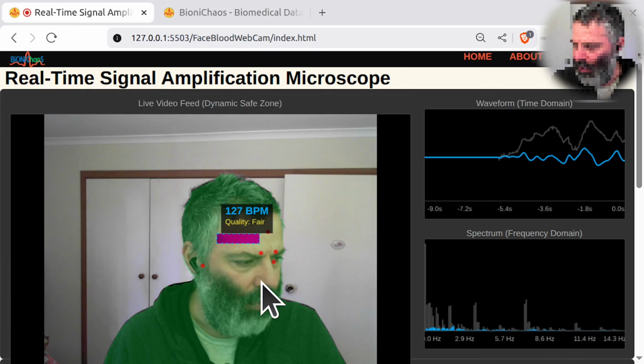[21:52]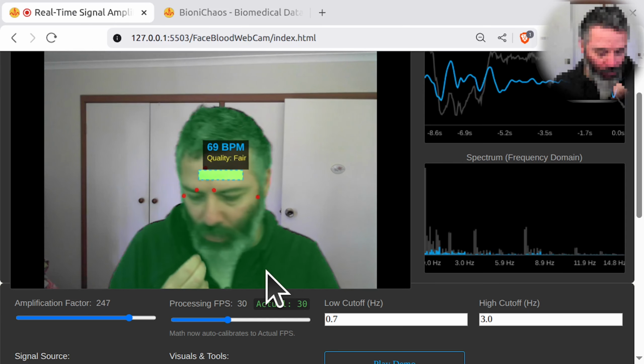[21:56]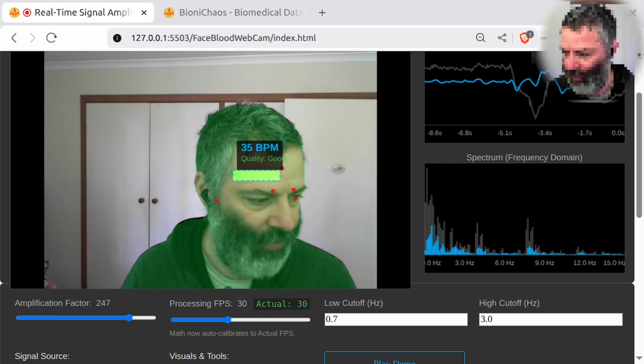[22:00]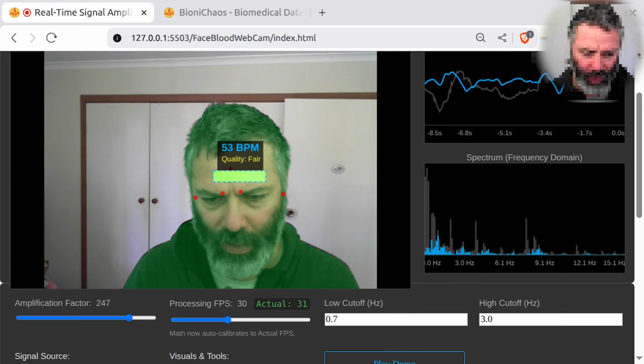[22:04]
So it doesn't seem to take into account the actual frames per second value. It seemed to only work with the original value of 30. So there's something hard-coded somewhere in the code.
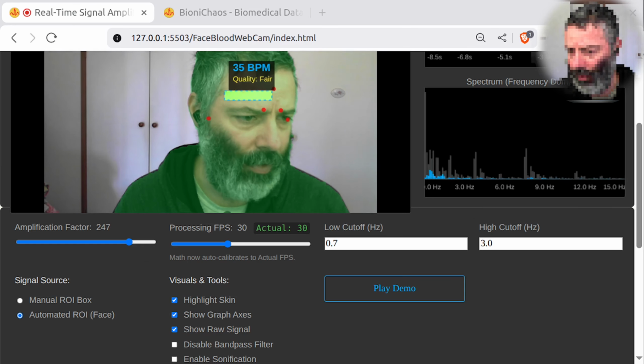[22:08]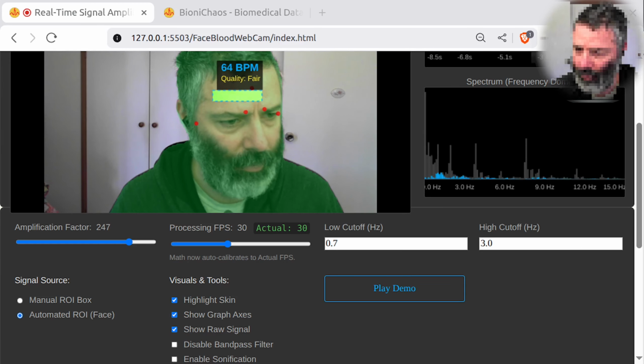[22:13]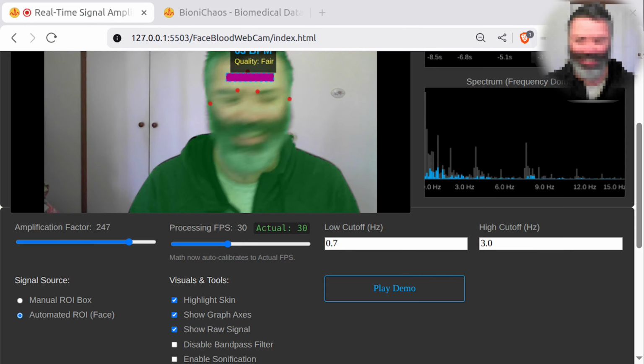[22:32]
Okay, filter toggle. We'll have separate ones: high pass drift removal on by default, low pass noise removal off by default, as per my request. Thank you very much. And hard-coded BPM fix. You're right. The issue was that while we were measuring the actual FPS, the bandpass filter itself was still configured using the slider value. Okay, just fix it.
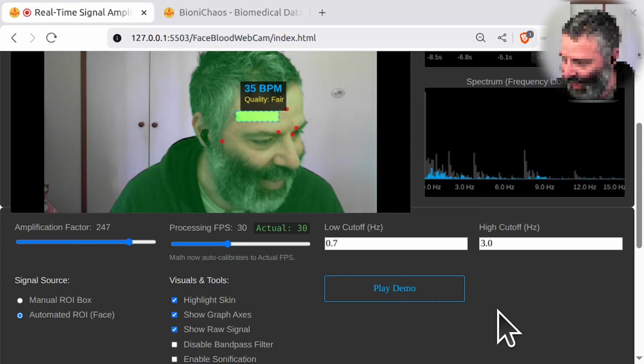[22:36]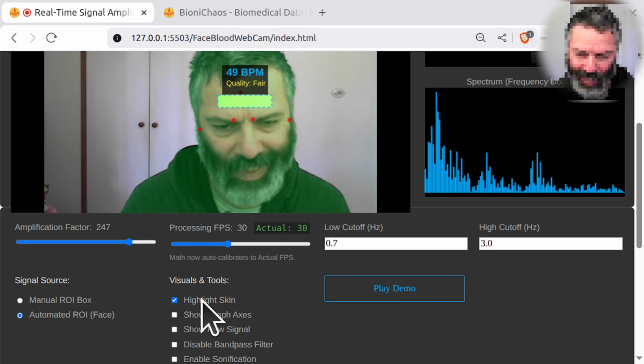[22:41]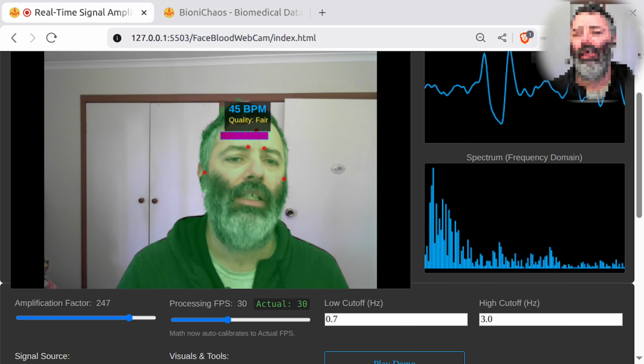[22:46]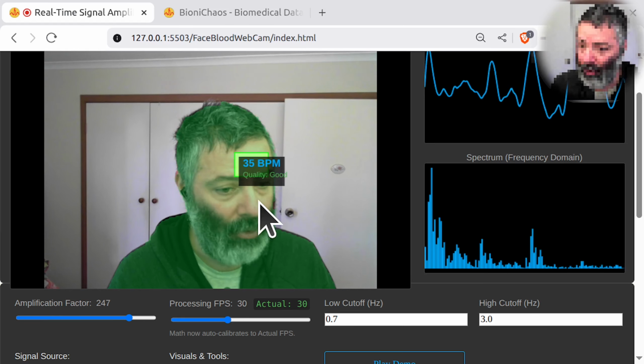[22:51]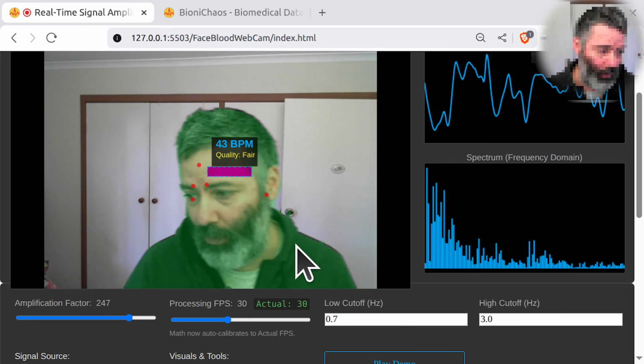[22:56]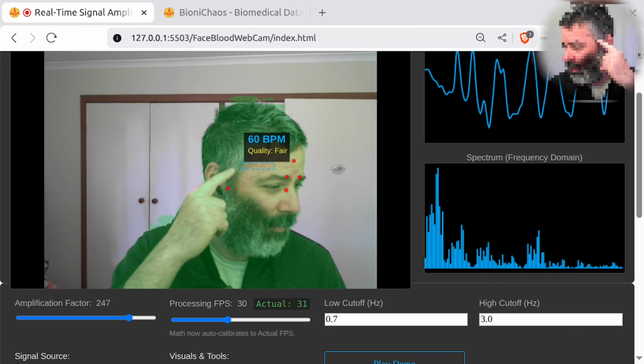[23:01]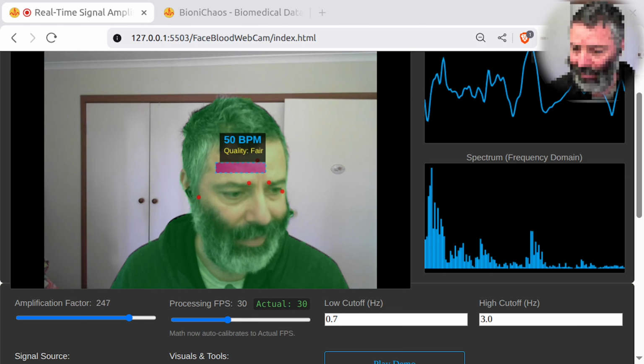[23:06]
Let's see. Yeah, models. Originally, the idea was, by the way, to find the whole skin instead of just doing the ROI. And then we have a manual ROI. We can select the box on your skin. We have an automated ROI that will find your forehead for you. So that's working okay-ish, except I'm not sure what's happening when the hairline or something is in it. So that's still yet to be tested.
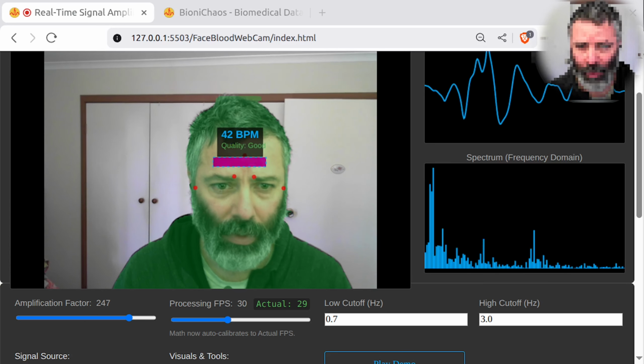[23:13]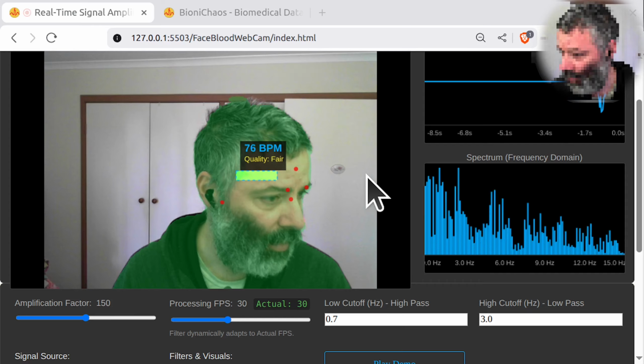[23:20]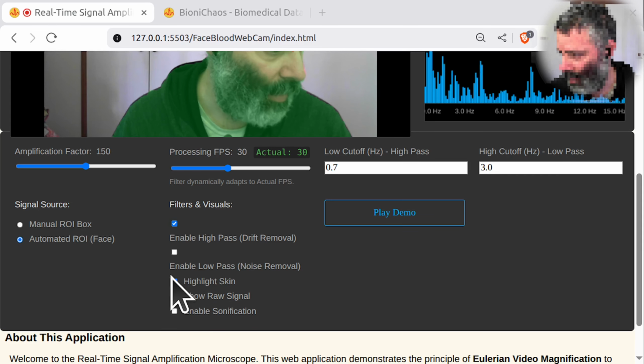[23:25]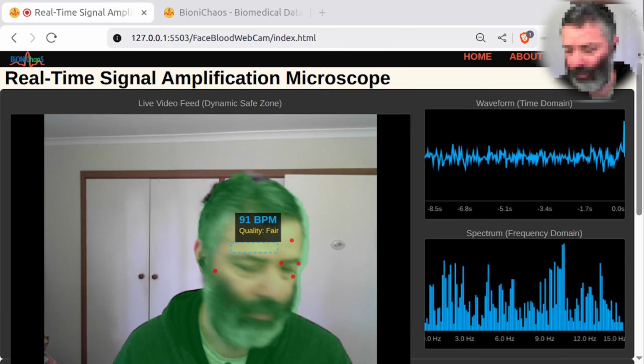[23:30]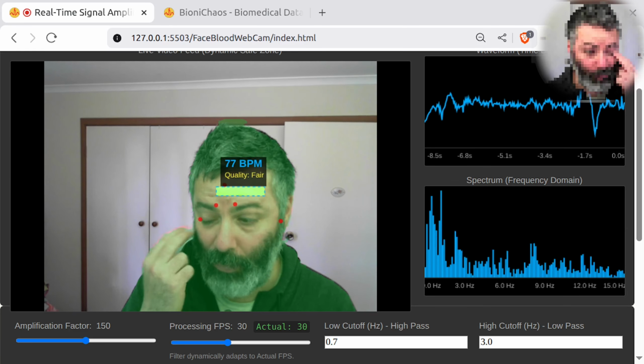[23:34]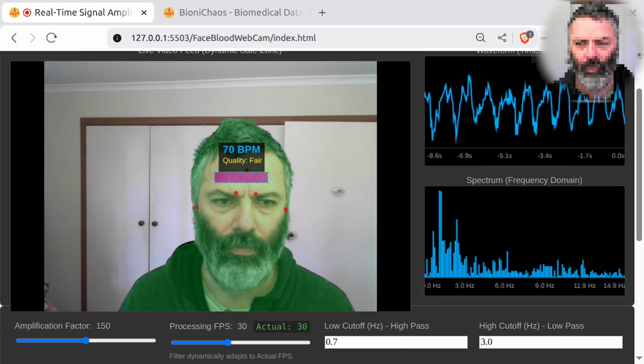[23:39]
Okay, we have the updated code, 775, 782. Okay, so it's longer. No, longer doesn't mean better. Probably not. Okay, we enable high pass, enable low pass. Okay, can get a quality reading with that. Yeah, we're getting our promised 70.
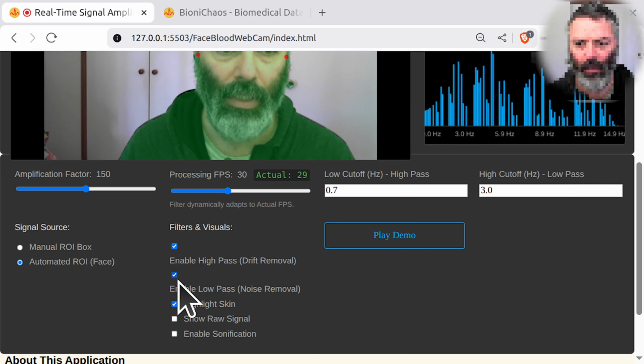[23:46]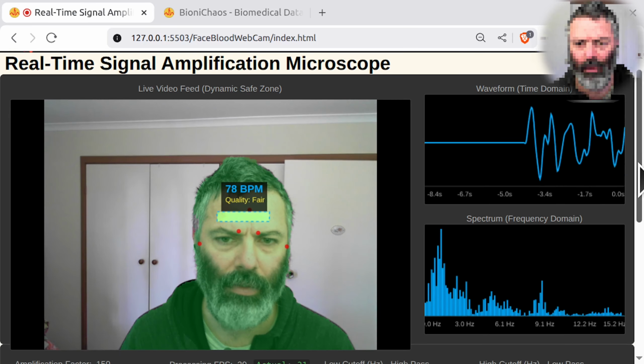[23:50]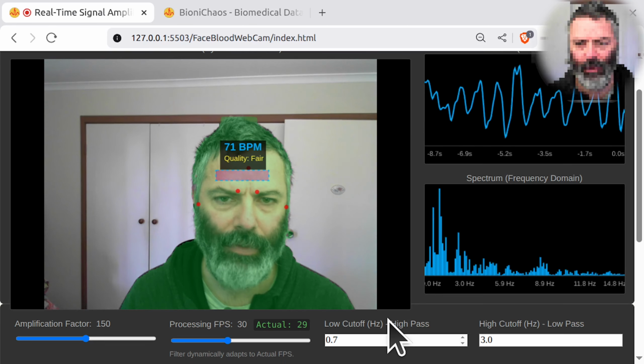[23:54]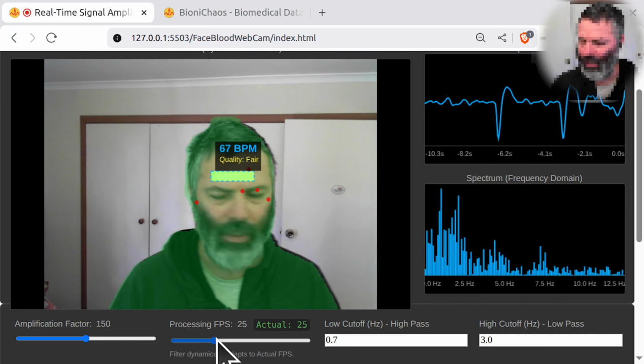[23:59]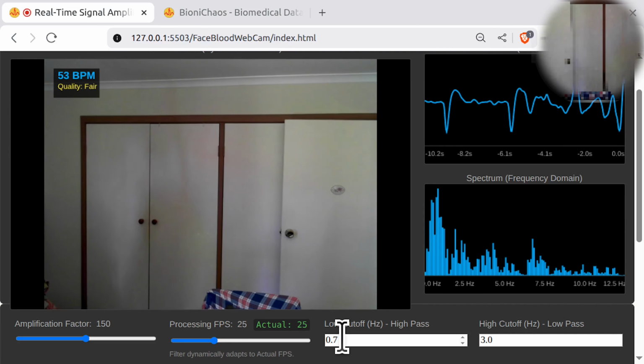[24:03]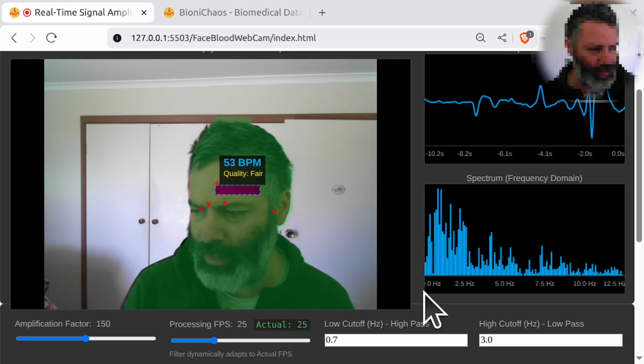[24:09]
Just enable high pass as well. And do another one. Try changing the FPS. It's actually sensitive to the light. Wait. Actually, natural light might be better for it.
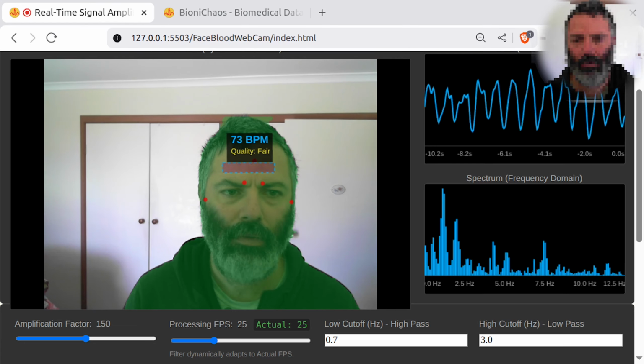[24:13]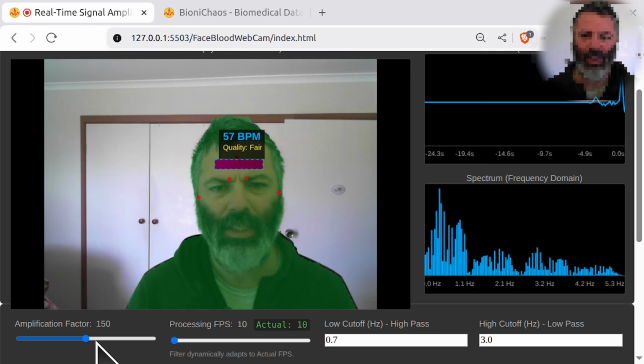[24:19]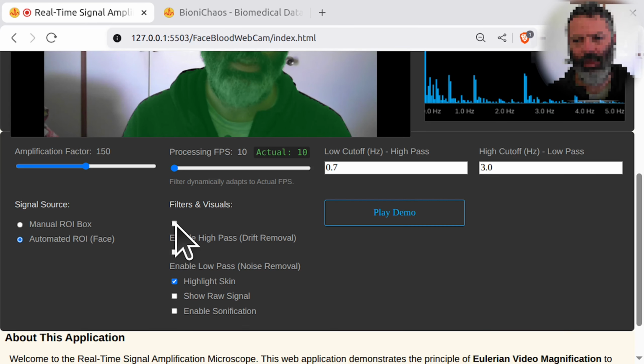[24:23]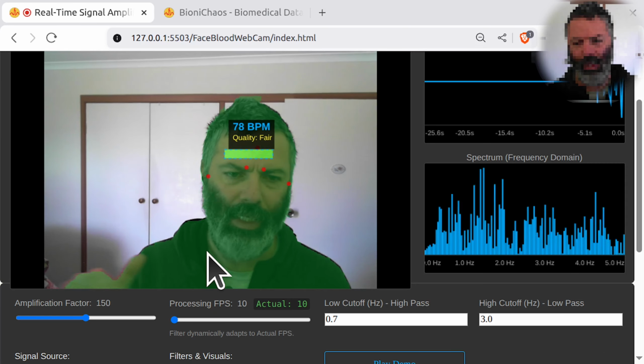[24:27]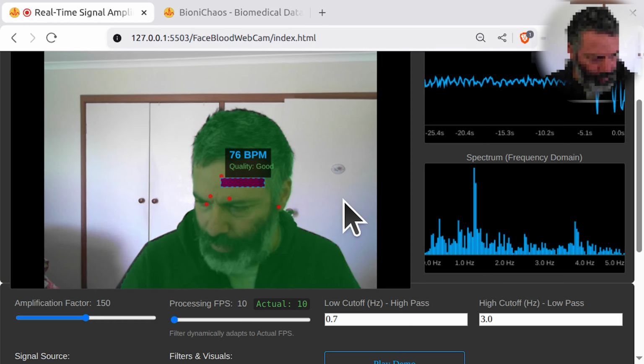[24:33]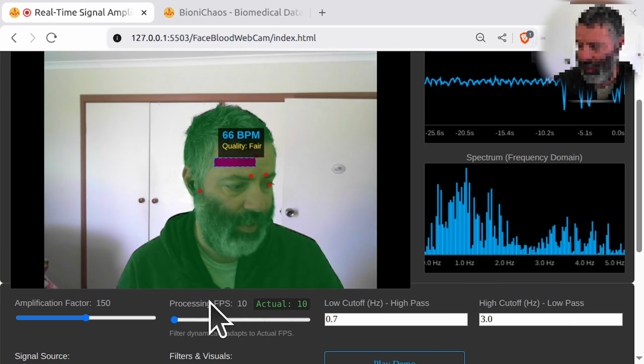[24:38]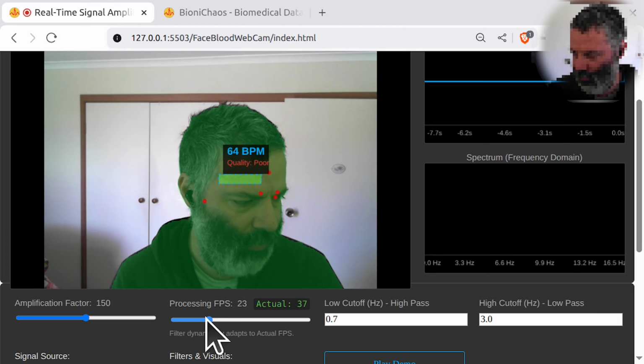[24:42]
Do we need more amplification? Because we can go all the way down to 10, can we? No, it definitely needs the high pass to get rid of the baseline drift. 76. Mine shows 74. So that's okay, I think. Okay, we definitely don't need to go all the way up to 60.
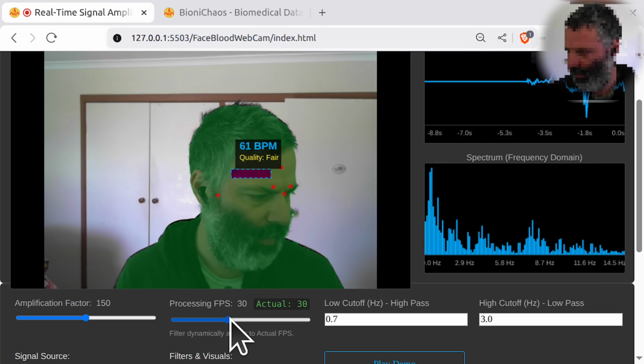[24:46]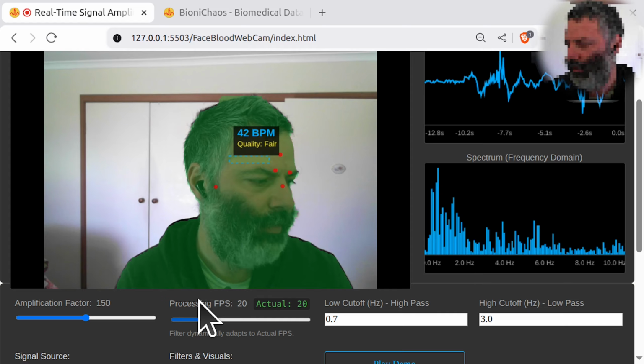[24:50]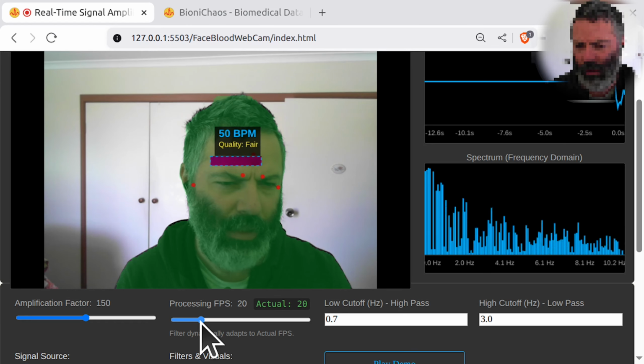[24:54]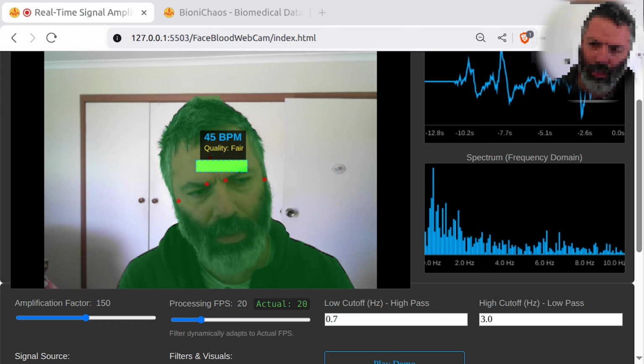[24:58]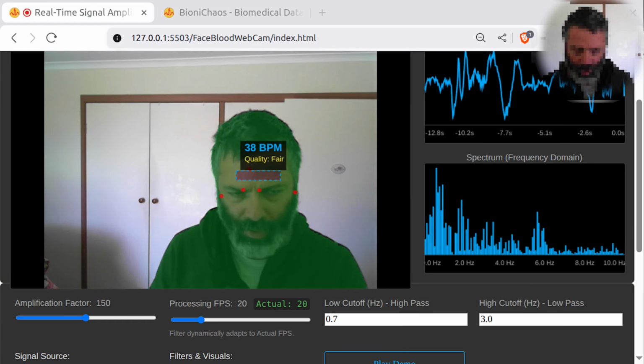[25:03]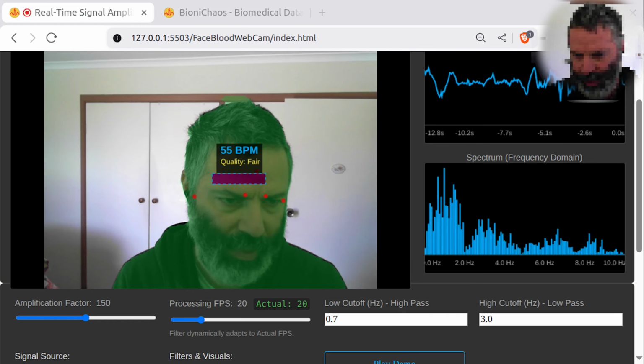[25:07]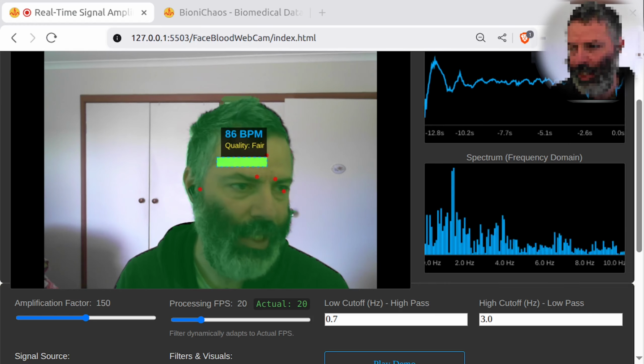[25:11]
Default can be like 20 or something. The range is 10 to 30 and default is 20. Can we just change the processing FPS slider values? What do you think good values would be? And what do you think about a minimum of 10, maximum of 30, and default value of 20? Obviously, we can change it manually.
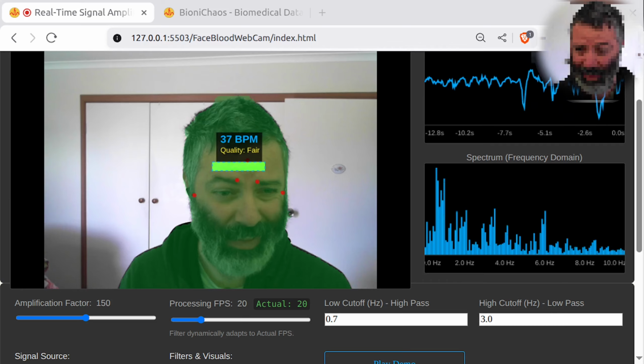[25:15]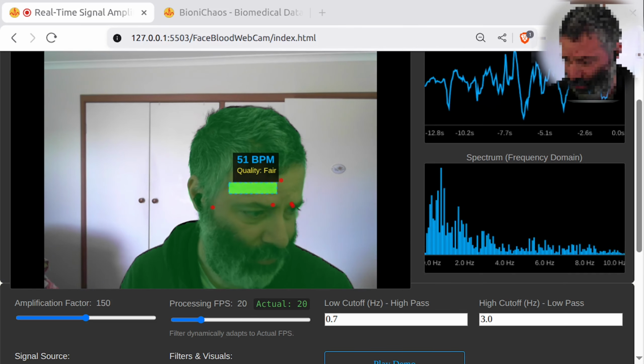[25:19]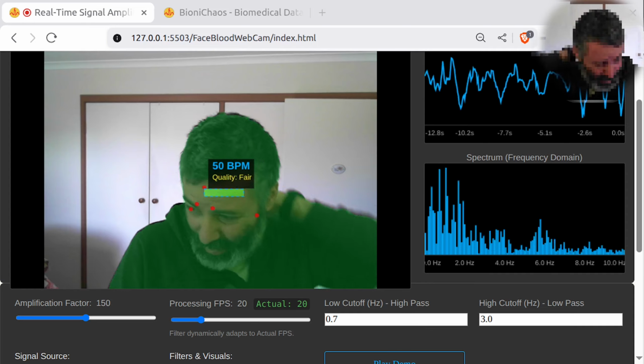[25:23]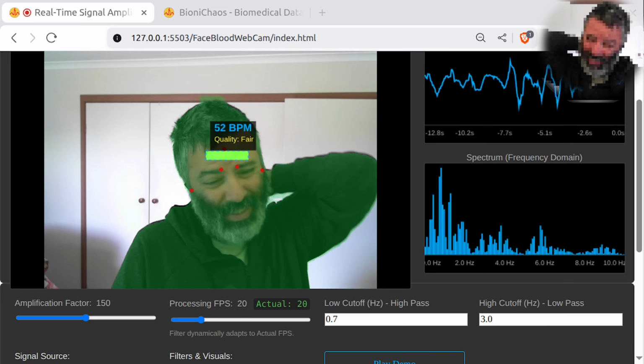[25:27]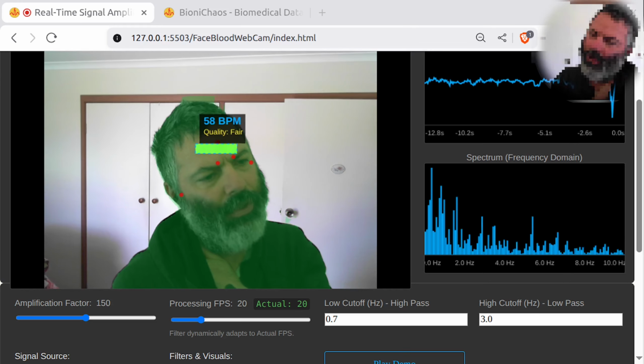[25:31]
Yes, I know. We can do some manual editing to the code, but that's a concept that we are interested in, not the actual. Yeah, and we don't want to hard code anything. Ideally, we don't want any magic numbers there at all. Well, that's why we're choosing a range. We'll have to preset something, but yeah, so we're going 10 to 30 with a default of 20.
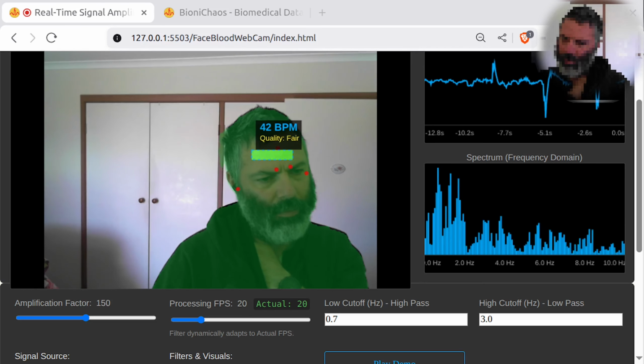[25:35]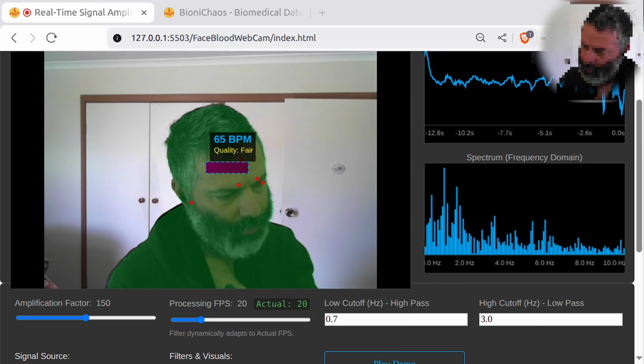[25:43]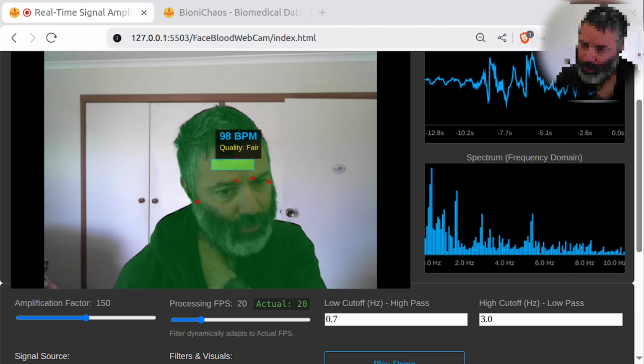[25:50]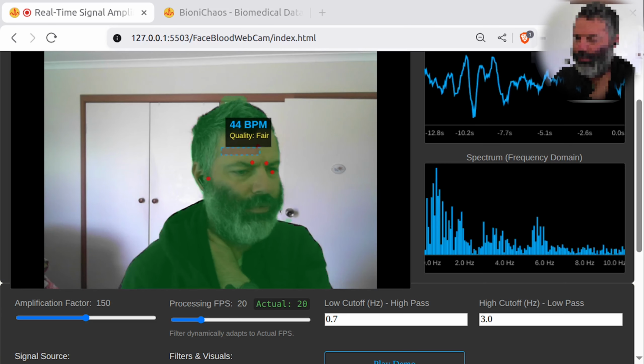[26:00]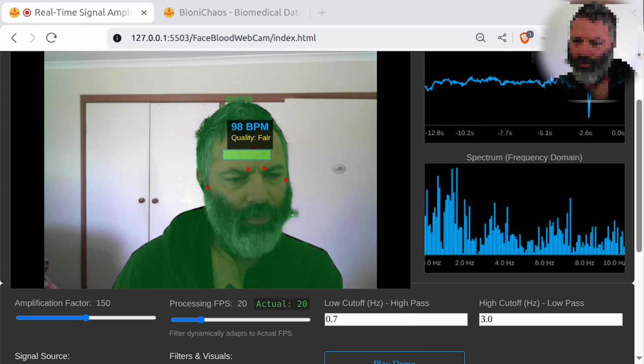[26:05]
Hardware reality: 99% of standard webcams run at approximately 30 FPS. Yeah, so 60 doesn't make any sense. So yes, we would make 30 the maximum. Nyquist theorem: to detect heart rate, which is roughly between 1 and 3 Hz, you mathematically only need a sampling rate of about 6 Hz. Setting the minimum to 10 is safe and provides enough overhead. The default of 20 is a sweet spot that provides a smooth visual graph, but uses 33% less CPU power than running at 30 FPS.
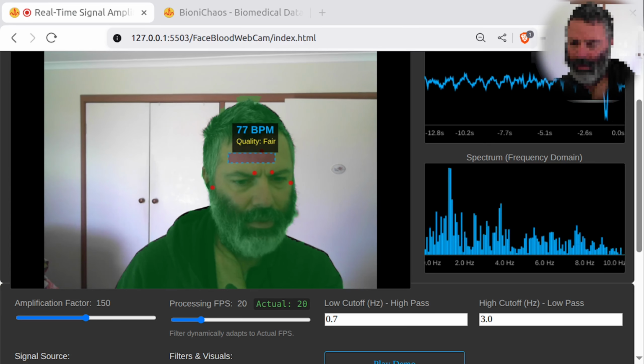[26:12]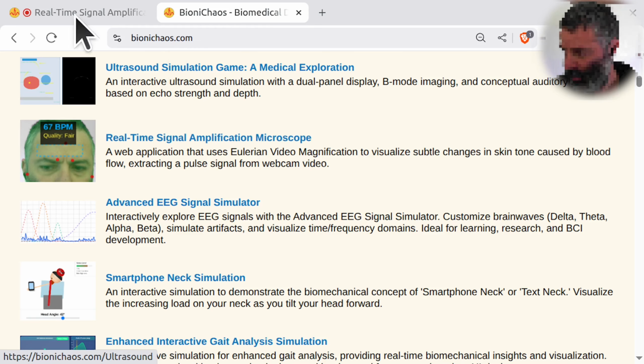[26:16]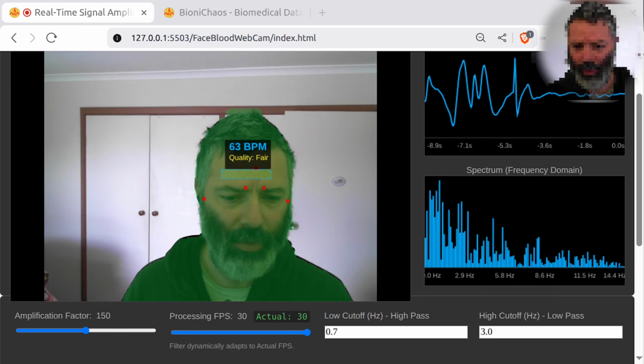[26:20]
Here's the updated code. Yeah, everything we do eventually is available on BioniChaos.com. Okay, it's now hallucinating on me, or...
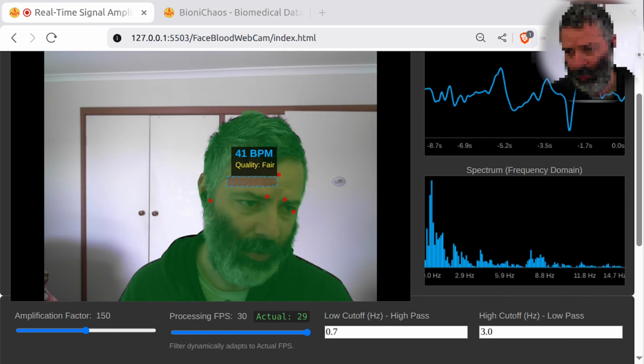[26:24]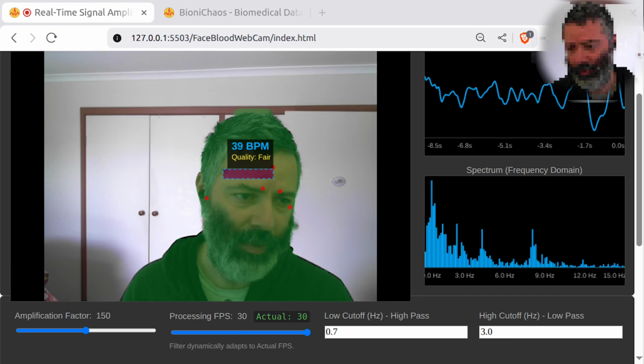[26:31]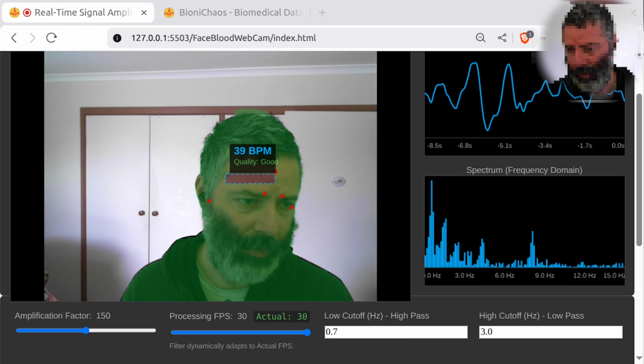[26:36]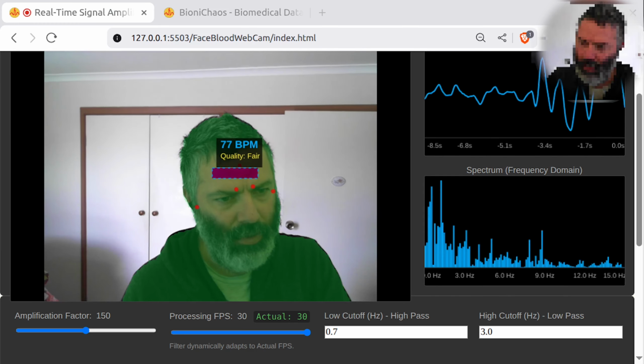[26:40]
Okay, so it's saying this is a classic signal processing problem known as sampling jitter or frame quantization error. The explanation of why 20 FPS fails when the camera is 30 FPS: your webcam captures light at a rigid physical interval, usually every 33.3 milliseconds, at 30 FPS. At the 30 FPS setting, the slider asks for a frame every 33 milliseconds, the camera provides one, yep, they are synchronized. You get a smooth periodic stream of data.
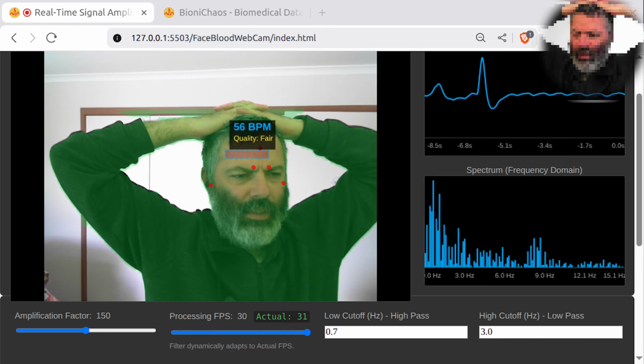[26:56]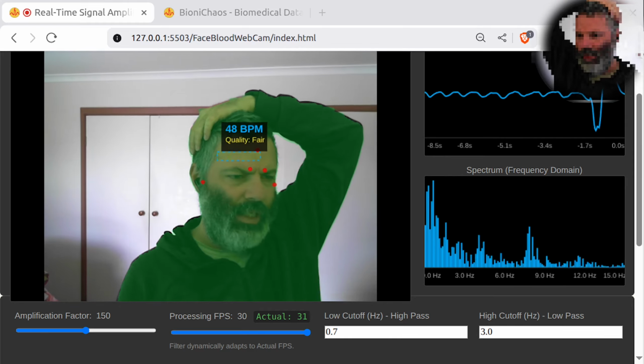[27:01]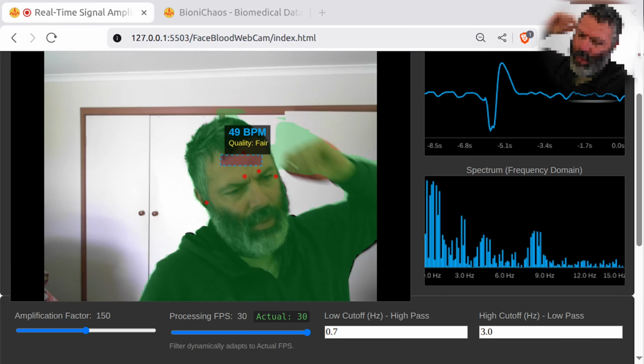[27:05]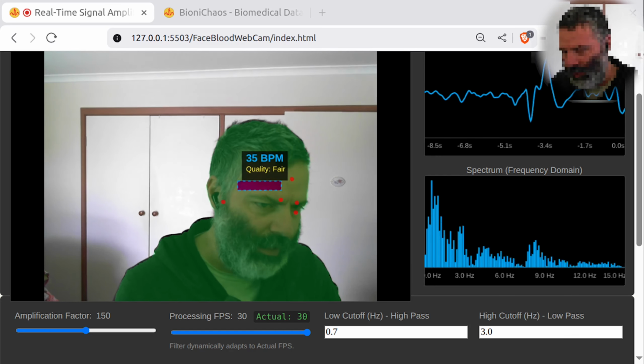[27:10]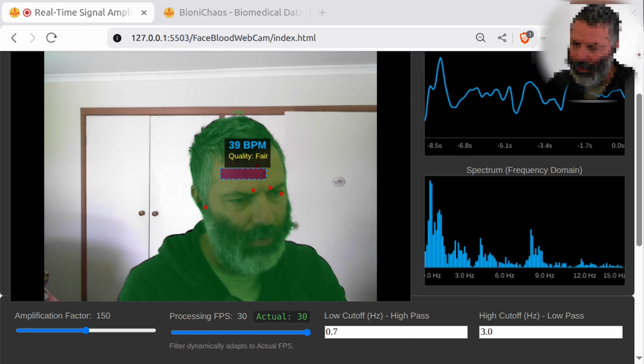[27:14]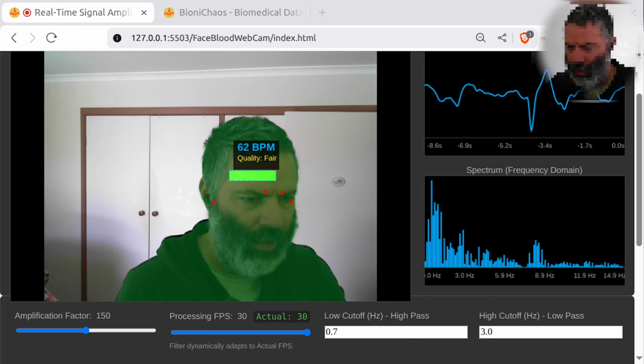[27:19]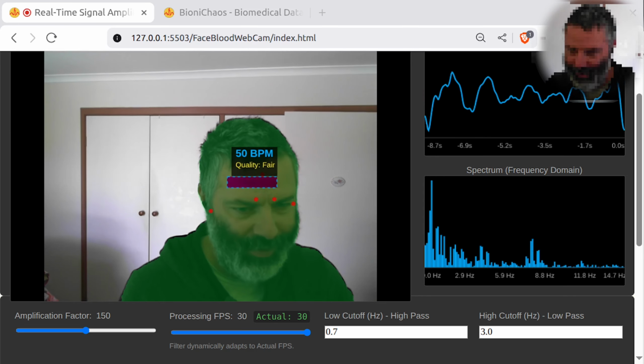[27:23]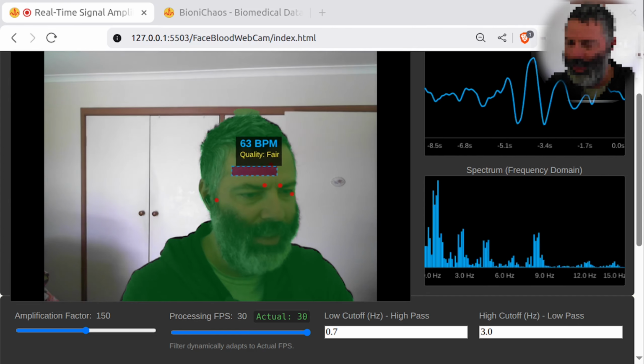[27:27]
At 20 FPS, the slider asks for a frame every 50 milliseconds. Okay, so at time 0, we grab frame 1. At time 33, the camera captures frame 2. We ignore it, waiting for 50 milliseconds. Okay, it makes sense. At 50 milliseconds, we want to sample the freshest image, which is now 17 milliseconds old. We process it.
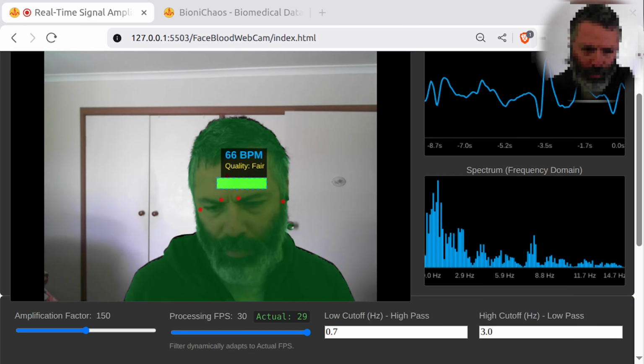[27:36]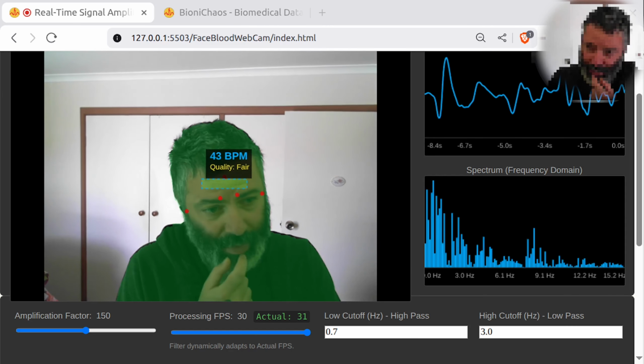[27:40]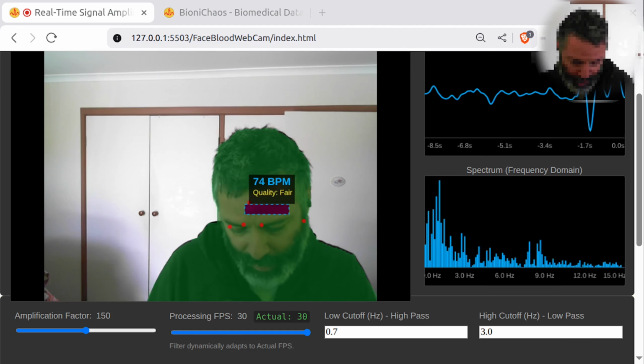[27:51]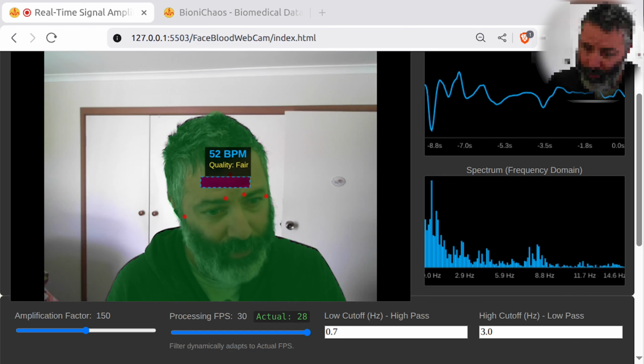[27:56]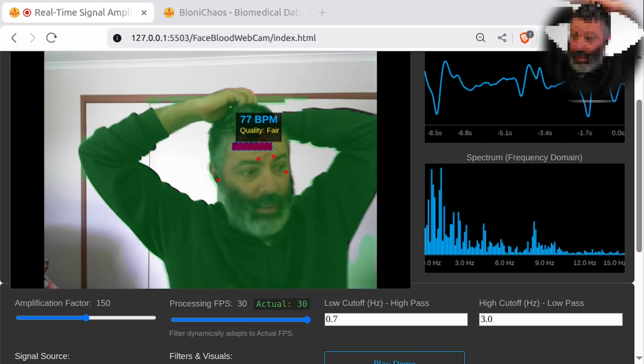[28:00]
Camera captures frame 3. We want to sample ideally. To fix this, we cannot rely on average FPS over 1 second. We must calculate the time difference every single frame. Would it be just easier to prevent the user from changing the FPS setting manually and just use the actual FPS and keep the indicator of what the actual FPS is? So essentially removing the processing FPS slider, would that fix all the problems? Yeah, I might get rid of it.
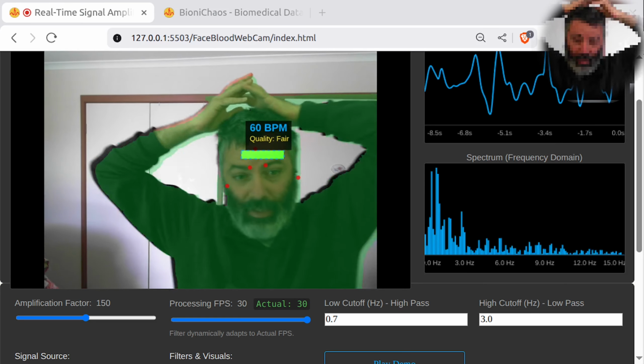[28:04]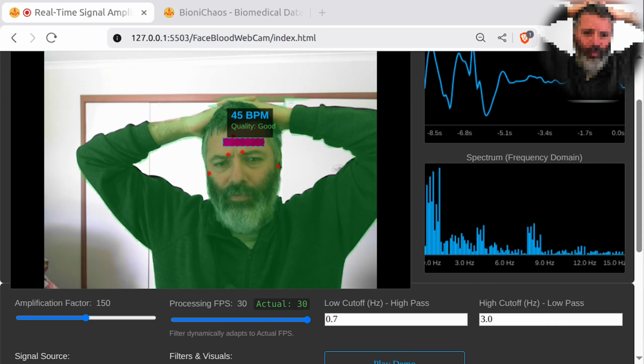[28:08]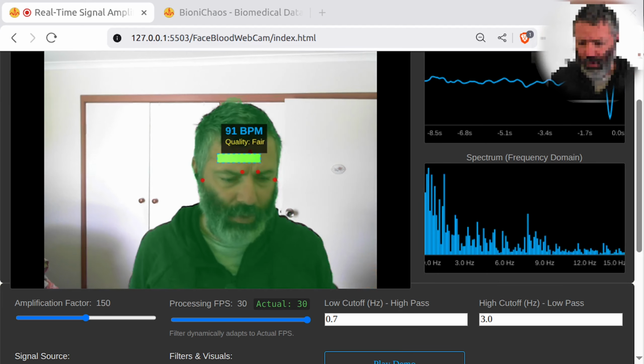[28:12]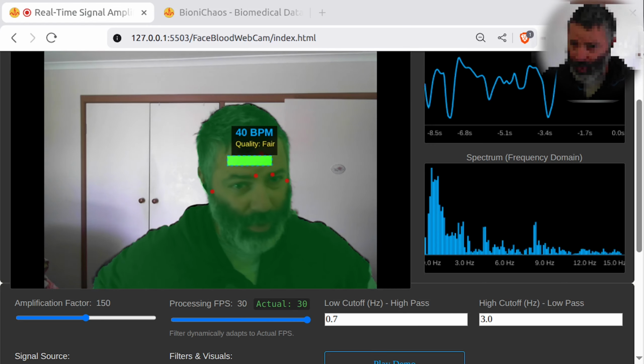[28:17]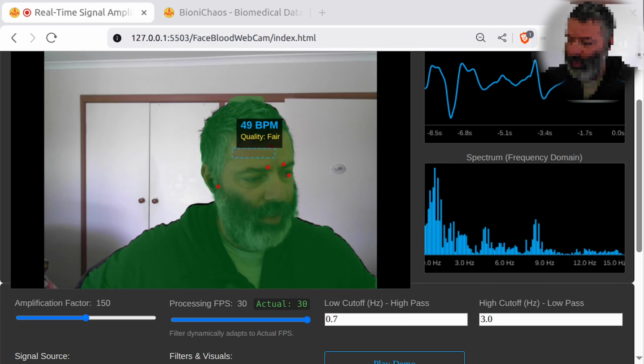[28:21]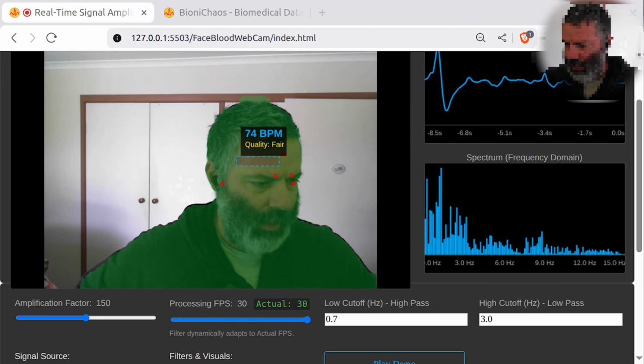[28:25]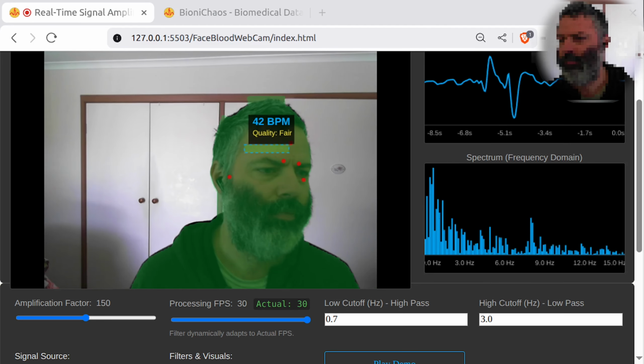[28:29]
Well, because the next question is what happens on devices where the FPS is actually variable. So the camera is doing 30, but 30 is an overkill. So we can do multiples. So no, we should keep that setting, but it should be just multiples of 30. So it could be 30, could be 15. Was it 7.5? Removing the slider is the best engineering decision.
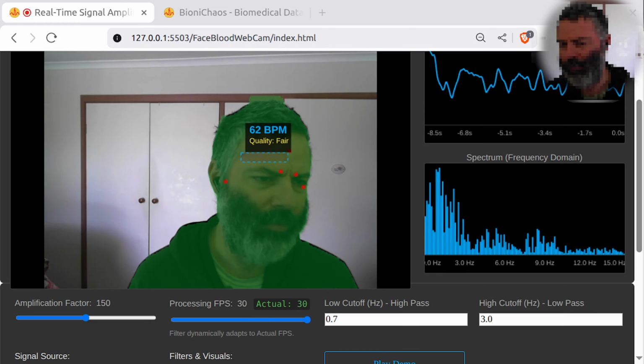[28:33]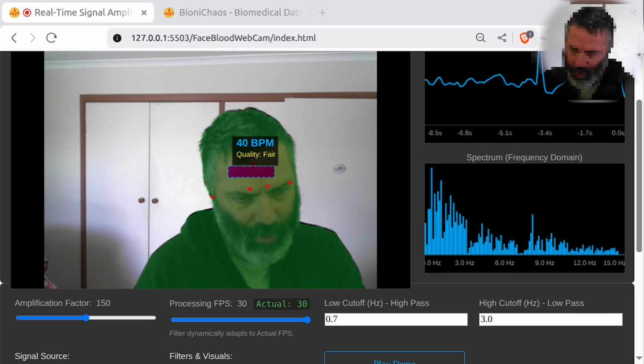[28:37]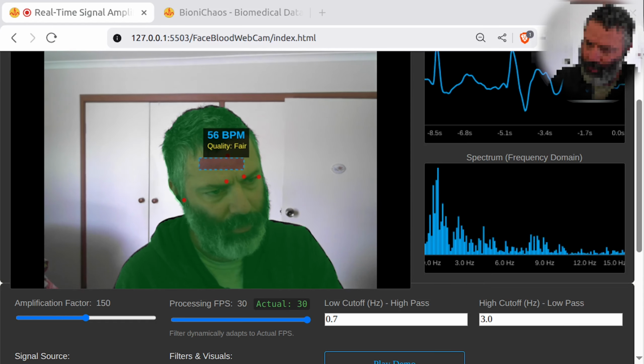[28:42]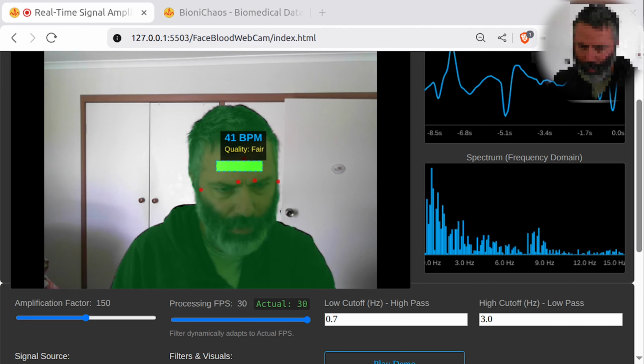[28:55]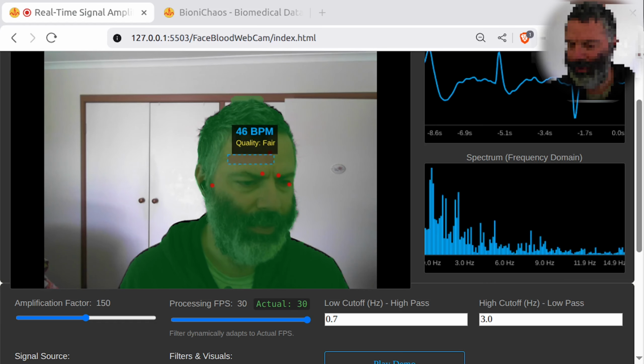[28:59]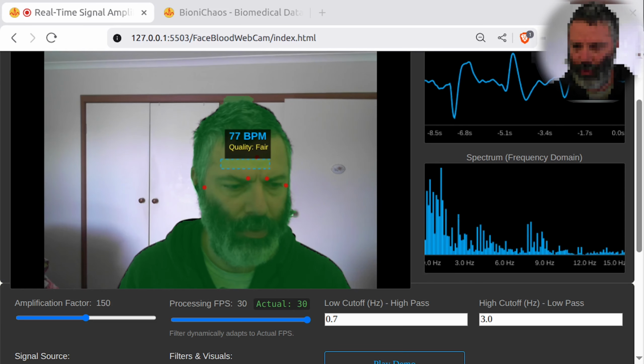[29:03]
By forcing the system to run at its actual FPS, which is dictated by the browser and webcam hardware anyway, we eliminate the conflict between what we want and what the hardware is doing. Yes, we remove the processing FPS slider and add a simple current FPS monitor. The system now processes frames exactly as fast as your browser allows, whether your computer runs at 30, 60 or 120. Okay, I'm still generating the code.
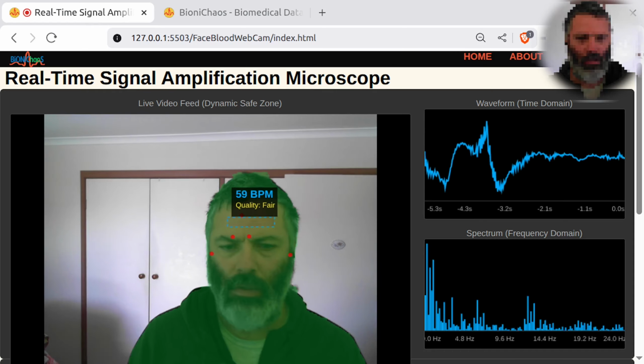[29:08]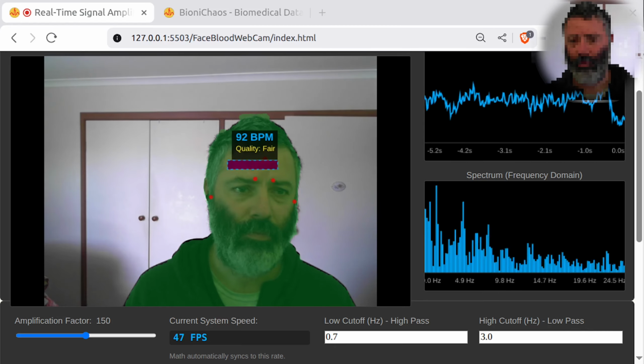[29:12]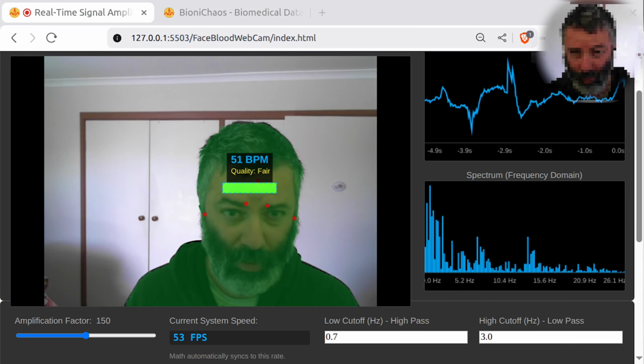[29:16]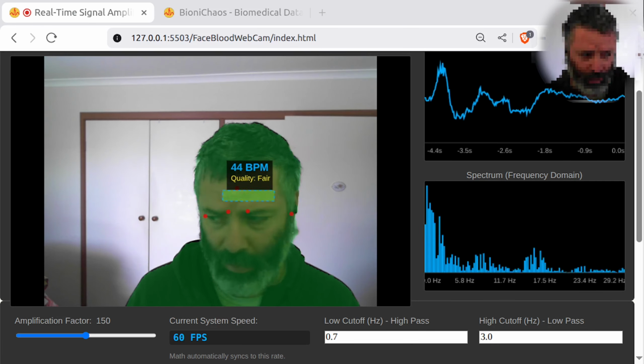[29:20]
Okay, we're having a calculation issue. Okay, so we're not getting a stable FPS, which might be a problem. I think that's what's causing the calculation to be off.
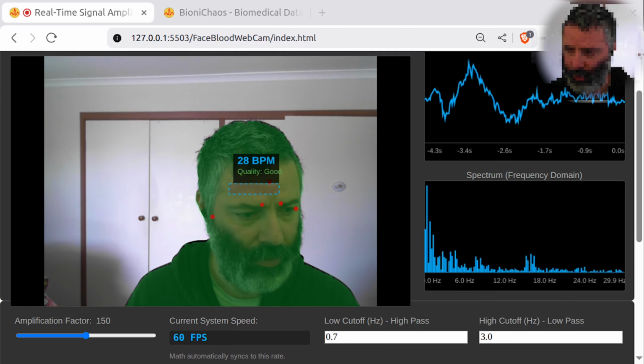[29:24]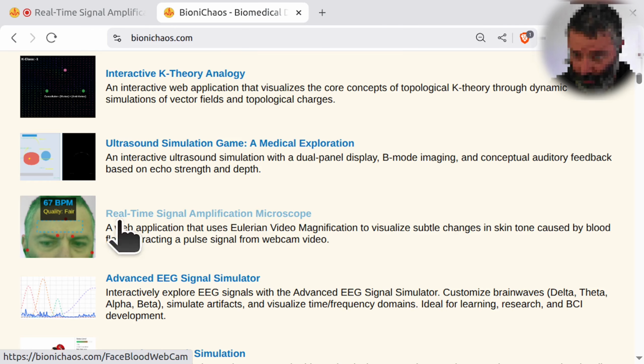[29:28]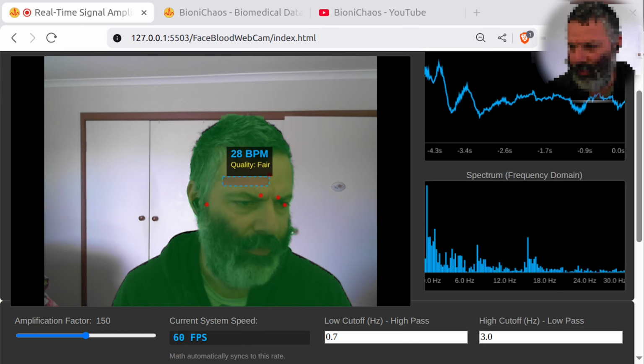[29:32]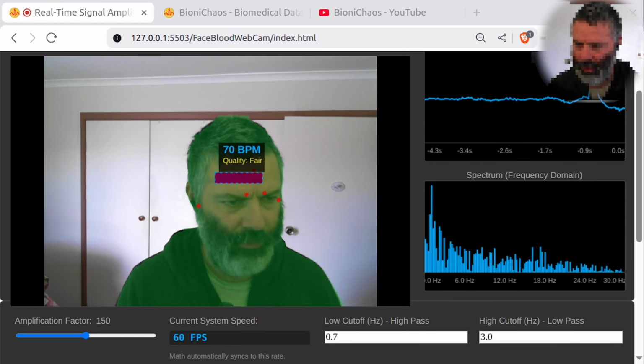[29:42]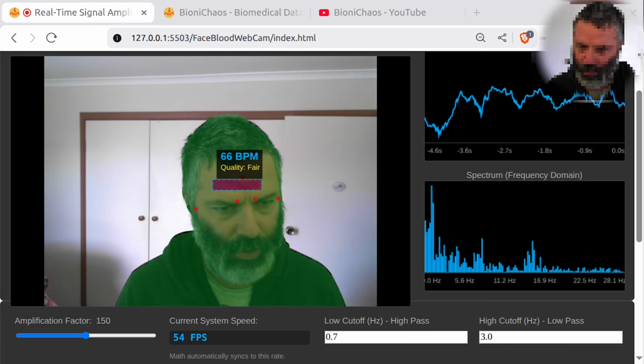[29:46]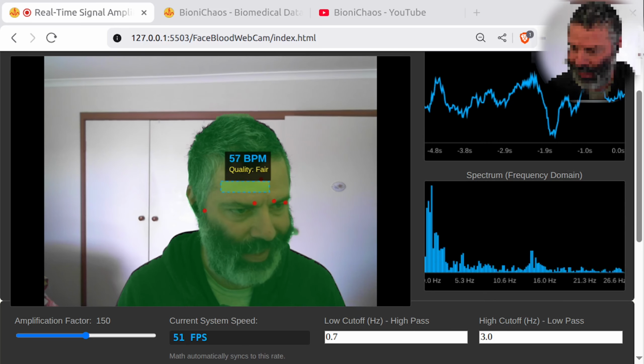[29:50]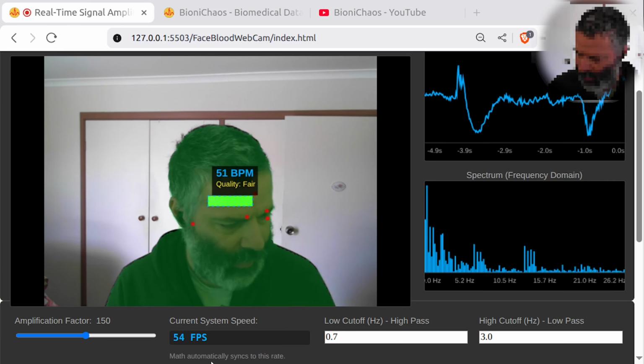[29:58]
They calculate BPM frequency. The math assumes that the time between every single data point is identical. If your webcam delivers one frame at 30 and the next one at 40, yeah, the jitter smears the frequency spectrum, causing the BPM to jump around. The solution: signal resampling with interpolation. Yeah, because it's fluctuating quite a bit, from 48 to 51 and so on and so forth.
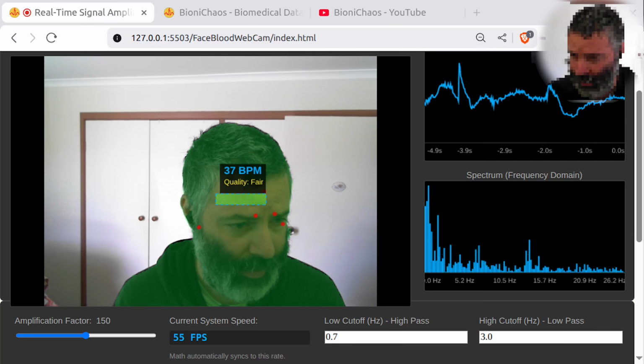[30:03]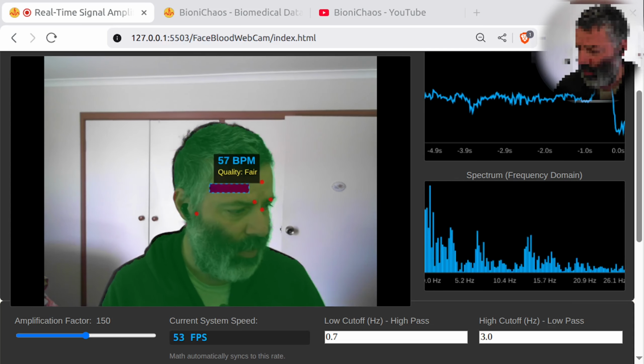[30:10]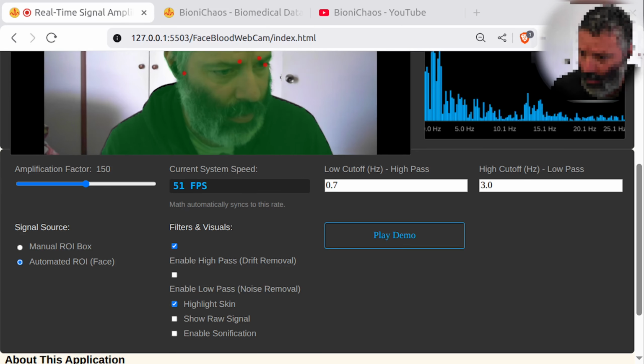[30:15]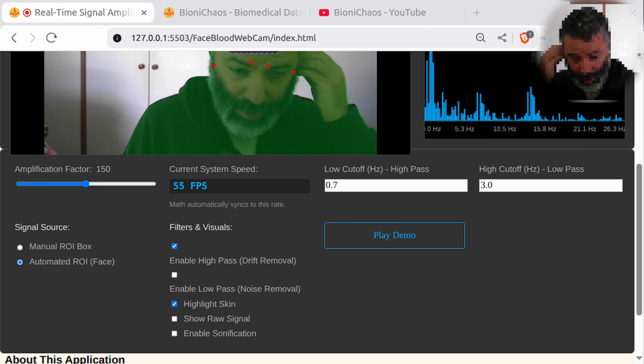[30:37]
Resampling, with linear interpolation, stable. Yeah, we're turning both low pass and high pass on by default. The time step logic implemented a resampling loop. The signal processing now runs strictly at 30 Hz, in mathematical time, completely decoupled from the visual frame rate. I don't know how well it will work on other devices, but okay.
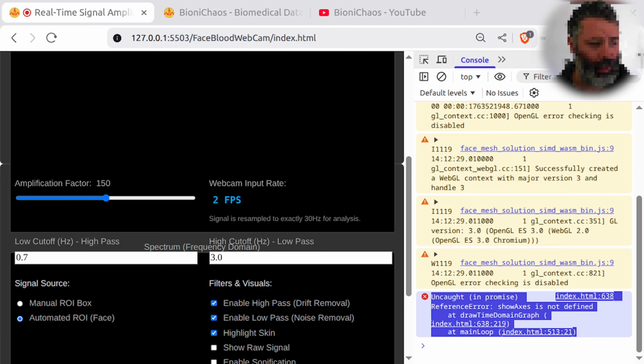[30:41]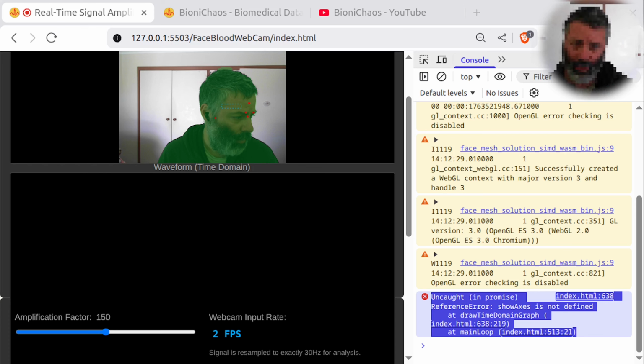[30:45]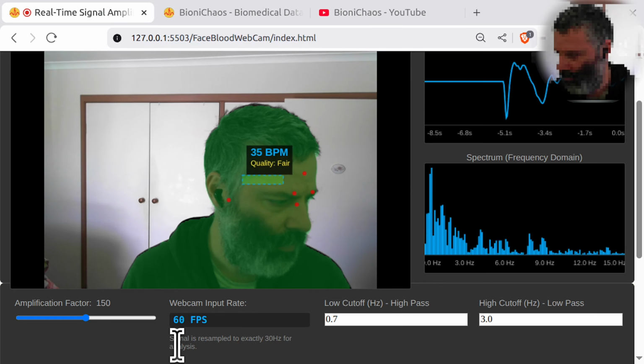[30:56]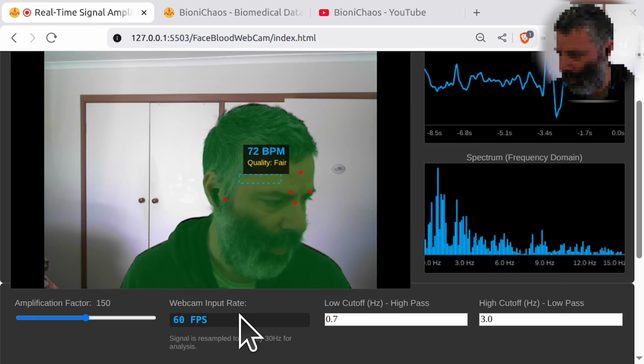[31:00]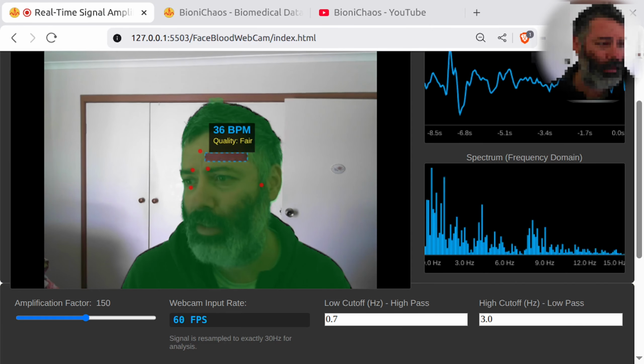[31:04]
Okay, it broke something. Hey, can we fix it with an agent? Let's give Gemini 3 Pro the same prompt. Let's see which one does it quicker in this case. I'm sure both of them can do it. Okay, so we have a 60 webcam input rate. Why does it say 60? Is it accurate at all?
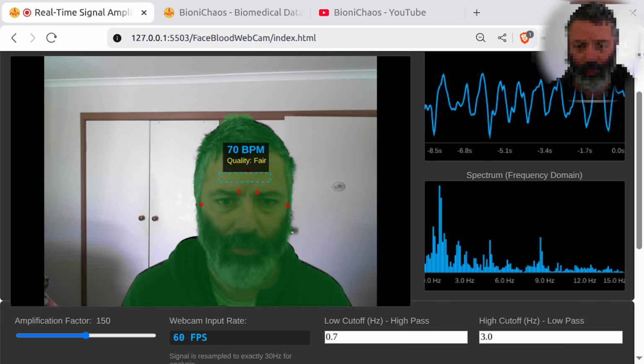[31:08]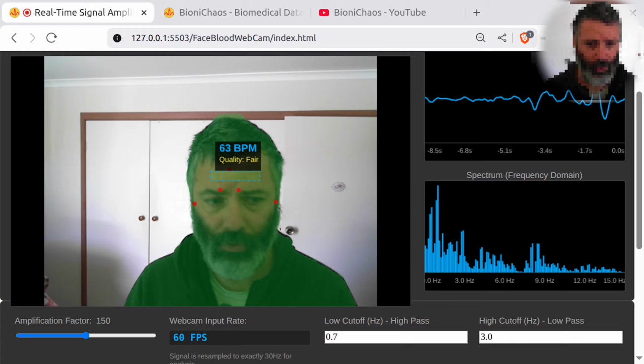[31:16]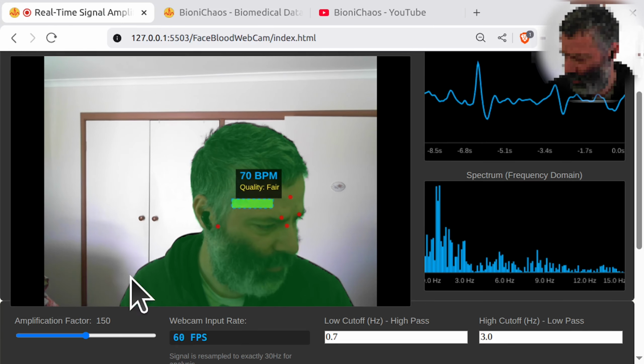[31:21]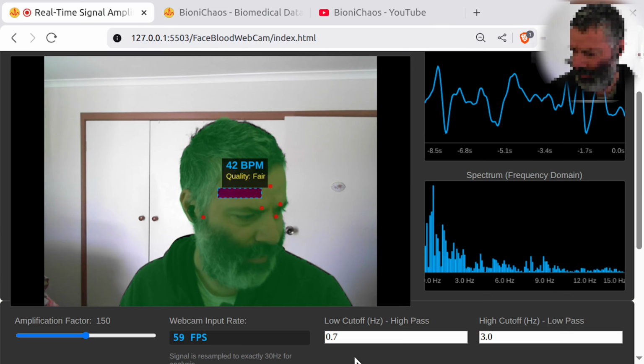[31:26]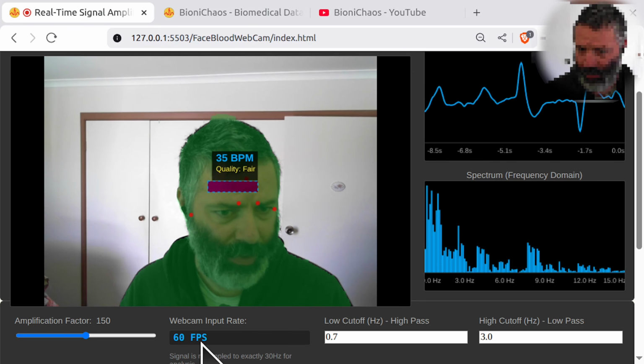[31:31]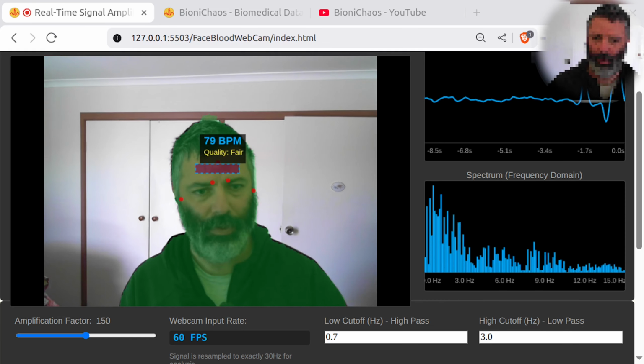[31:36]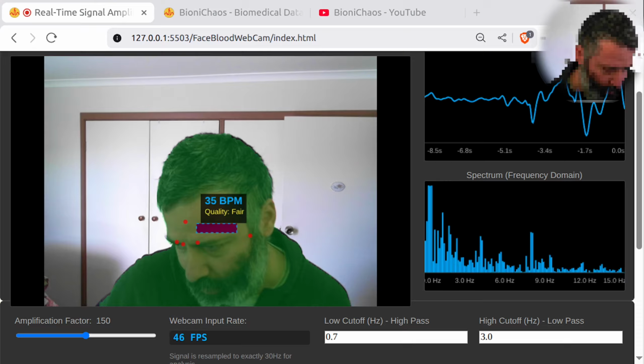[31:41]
I can see a good waveform. Yeah, we get a 70. Yeah, so that seemed correct. Now the problem is, what was the problem? Why does it now show a webcam input rate of 60 FPS? It's not 60, is it? But it's hardwired to 30. So yeah, not sure what's going on. Hopefully it will work okay on other devices as well. We can deploy and test it.
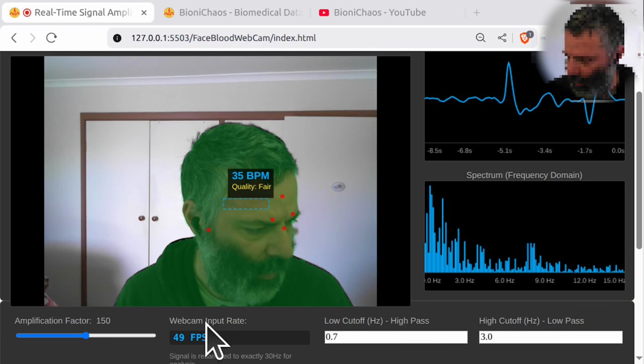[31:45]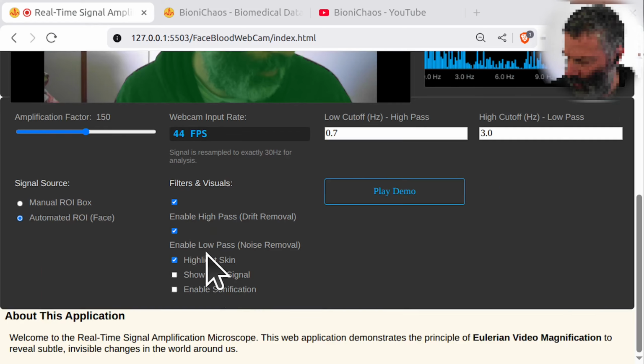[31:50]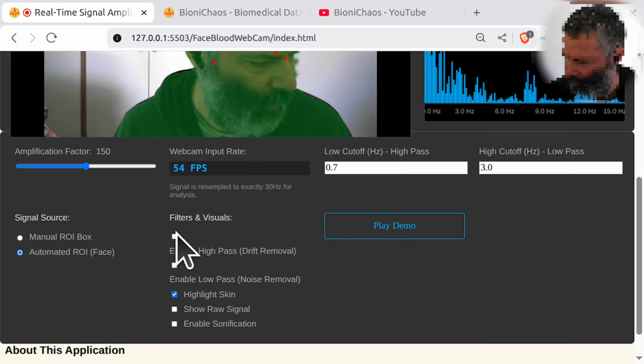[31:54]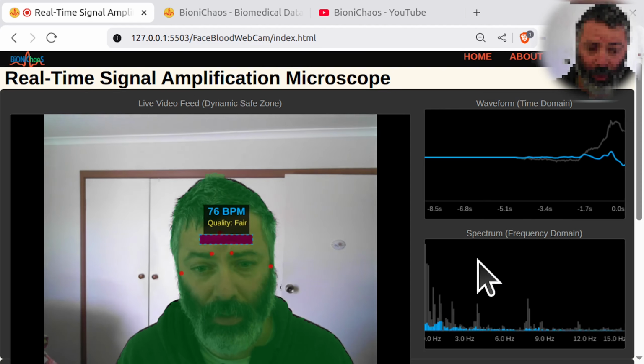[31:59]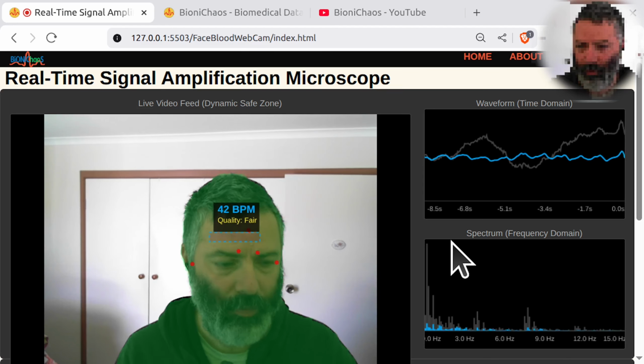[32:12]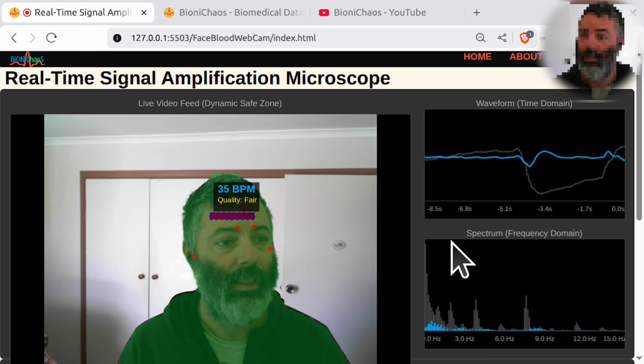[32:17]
Anyhow, now that the webcam input is actually fluctuating, it still should be working okay. The filters work, so we can have the unfiltered signal, or enable low pass. You can just show the raw signal and that shows you what the filter is doing. So it's kind of nice. Mainly removing that baseline drift, DC drift, whatever it's called. Yeah, kind of locking in on 70. My thing's showing 70 as well, close enough.
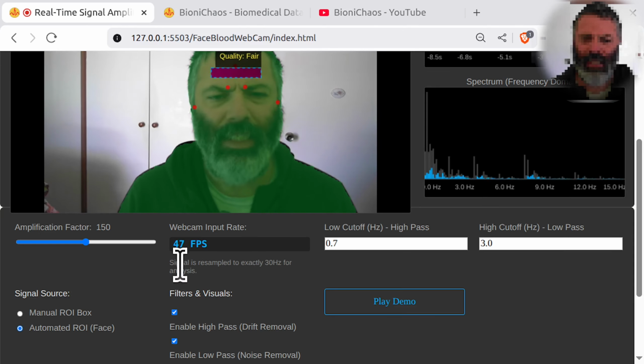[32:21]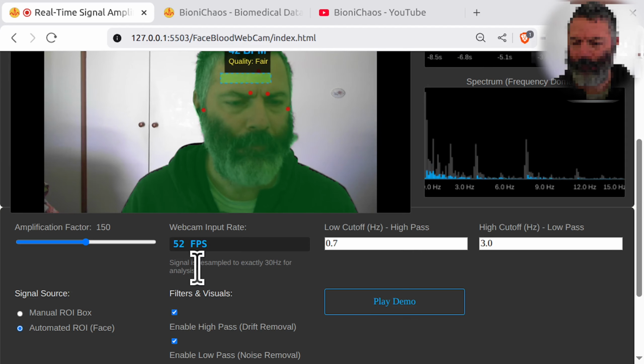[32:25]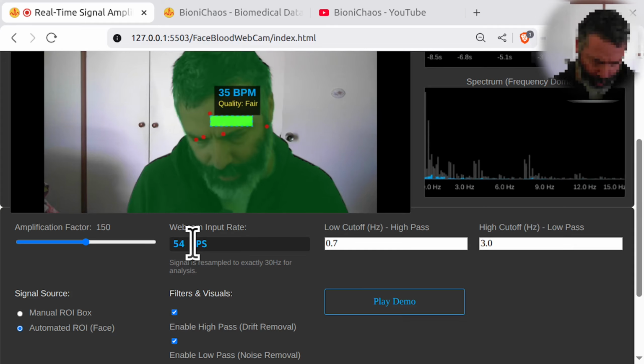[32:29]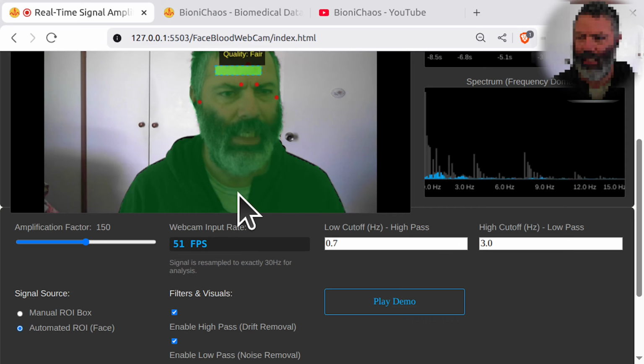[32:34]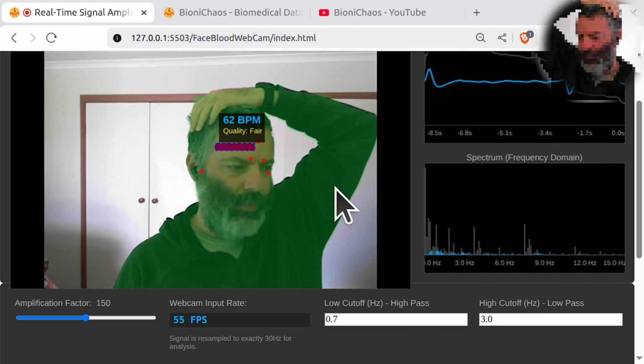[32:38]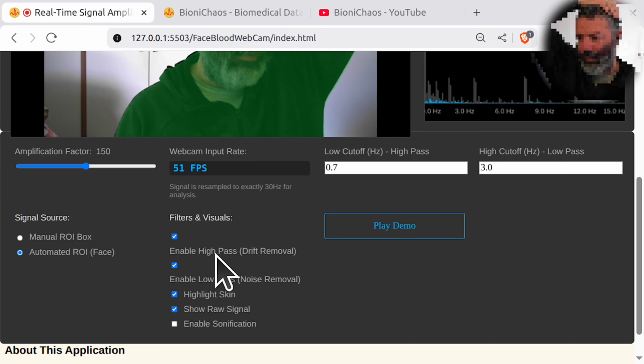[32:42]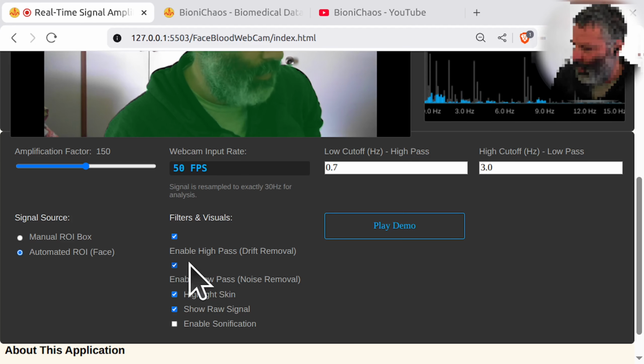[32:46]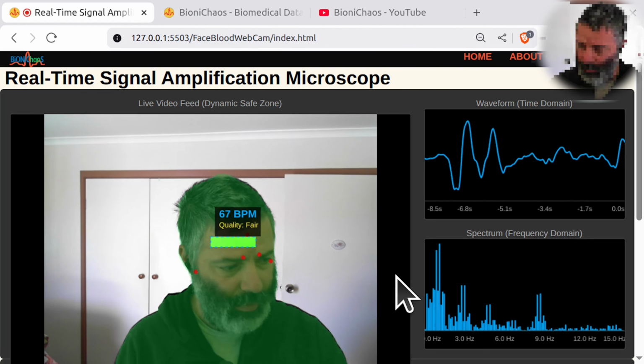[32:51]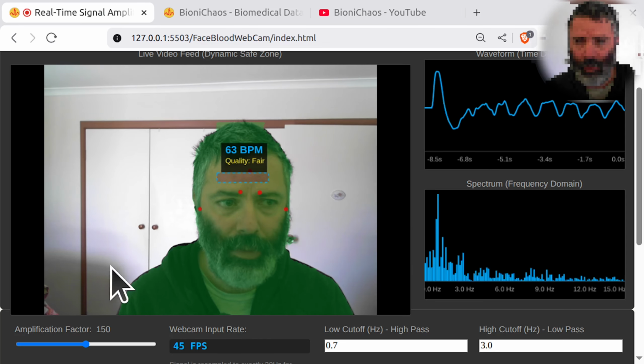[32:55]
So hopefully now, we essentially got rid of the FPS setting slider, so it should be more stable on other devices. And we added more filtering options. Enable high pass, so they're both enabled by default. And the low pass, you can turn them off, see what happens, or show the raw signal, which is actually disabled by default. You can see the actual calculated, not the actual input, frames per second rate. That will depend on your camera and your system. If you're on the phone, it will show you something different.
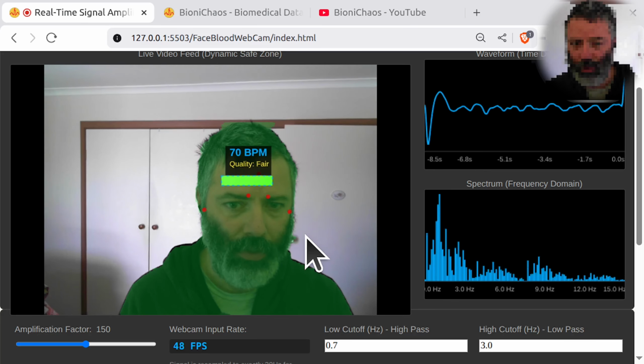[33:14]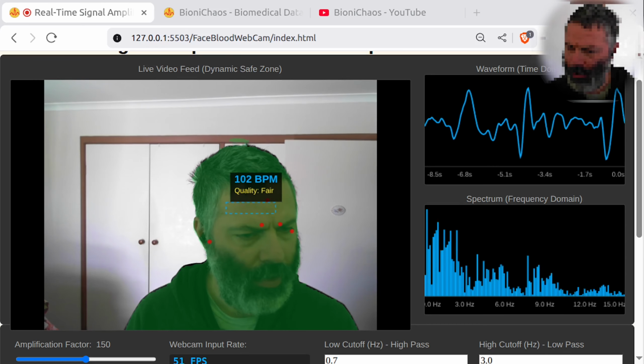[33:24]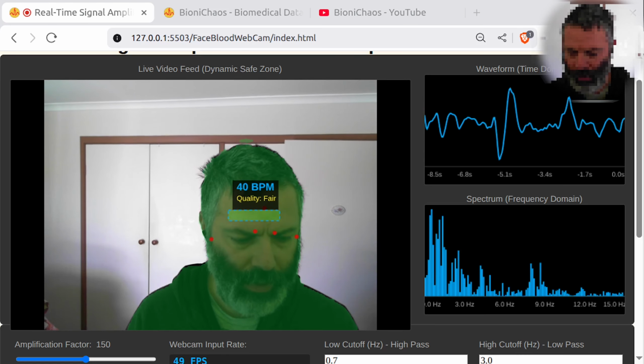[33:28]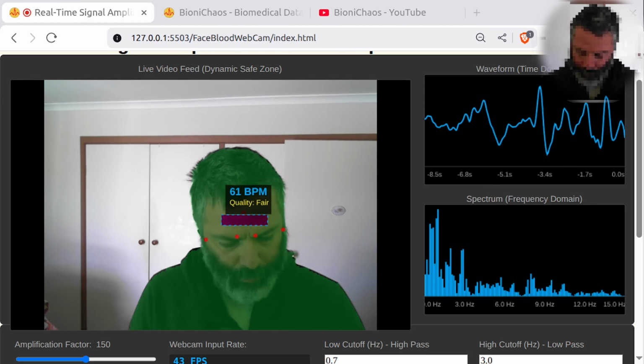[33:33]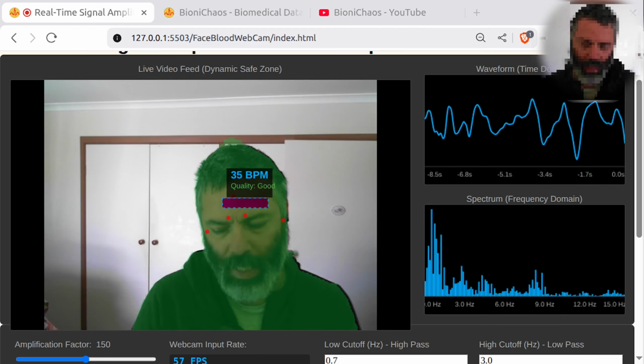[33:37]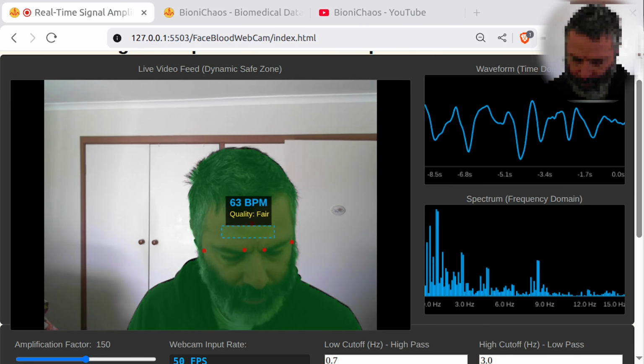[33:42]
But then the calculation is made assuming 30 Hertz. But what if you have a camera that does 60 Hertz? I don't know. Okay, so now the web application is assuming the camera is working at 30 frames per second. Is that correct? Hey, can we explain in the text below the web application, at the bottom of the page, what happens if we have a different camera that doesn't do 30 FPS, that does something else?
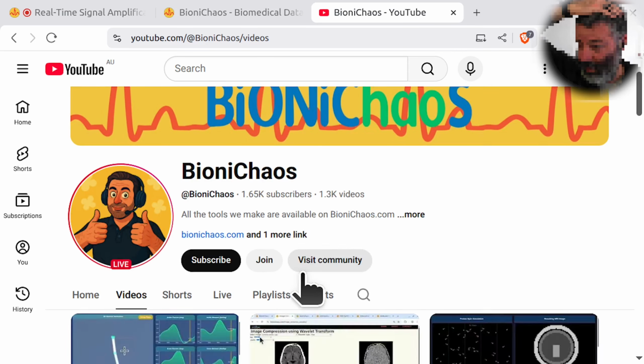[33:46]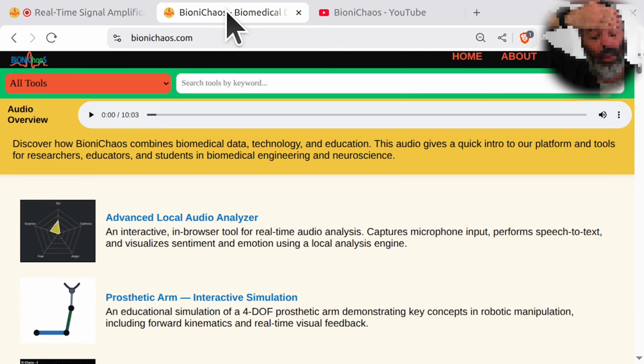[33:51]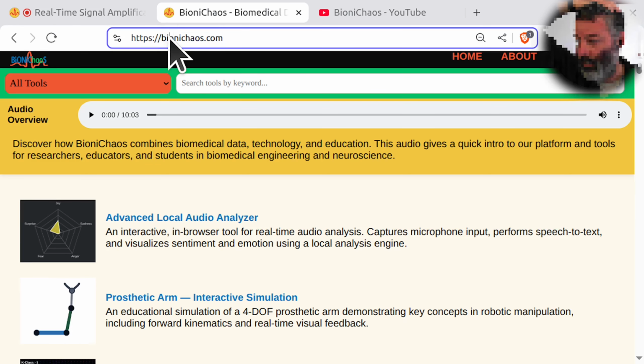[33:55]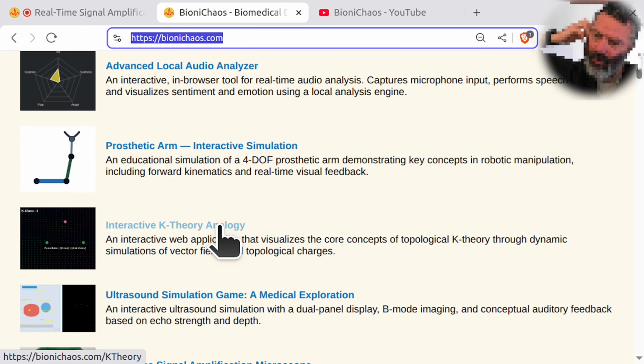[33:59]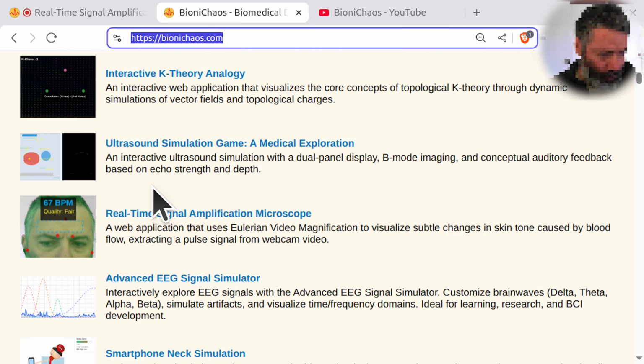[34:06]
Yeah, so we're doing all the development live on YouTube, and then we deploy everything we do onto our website, which is called BioniChaos.com, which you can see on my screen right now. So you can go and play with everything we developed in the past, including webcam filters and this one, which is measuring your heart rate from the web camera.
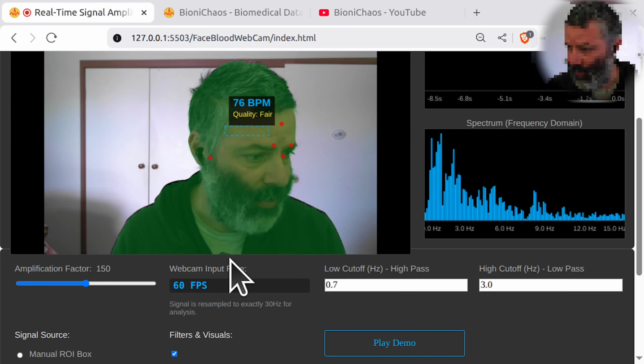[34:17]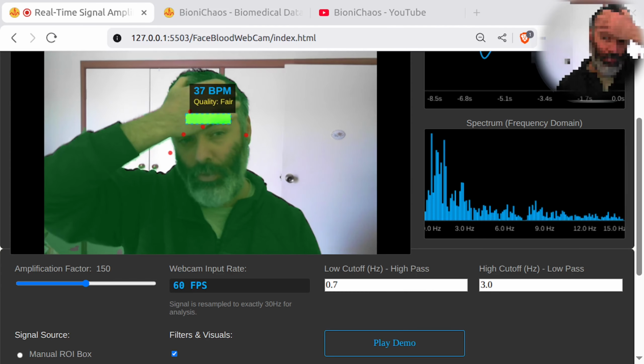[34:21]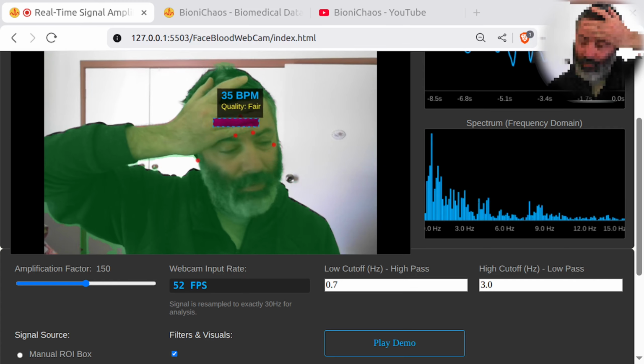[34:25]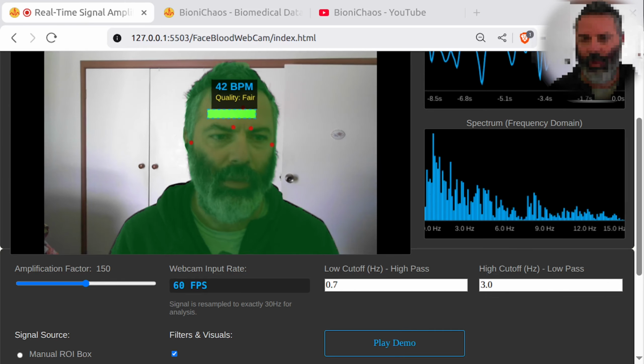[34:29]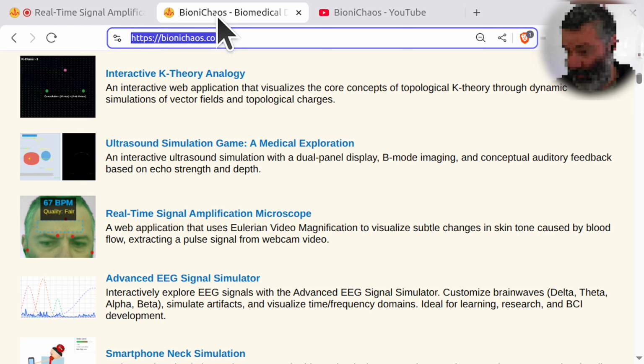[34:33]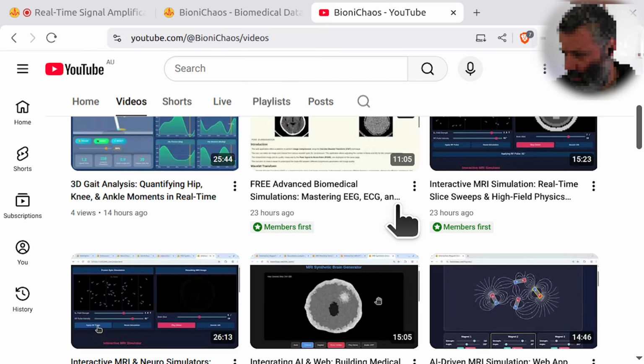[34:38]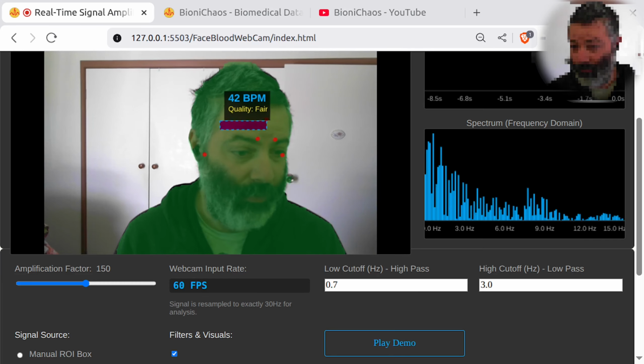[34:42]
So it was working on my machine properly, but people were complaining. I think it's not working if your frames per second is not stable or not stable enough. But now hopefully we fixed it. Maybe. Have to test it. But if you check the website and you have any specific questions, I'm more than happy to take them on. Probably they will be turned into prompts for future development.
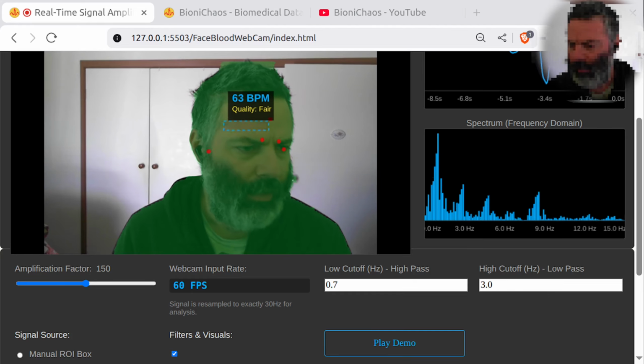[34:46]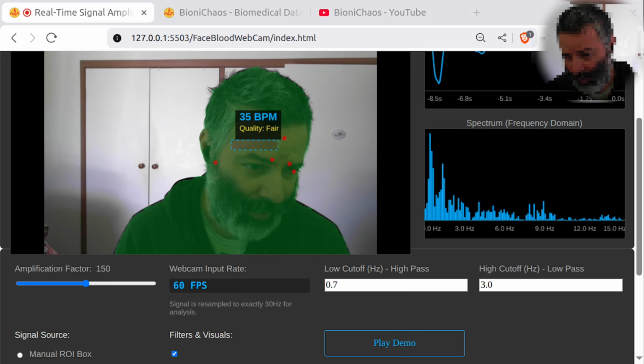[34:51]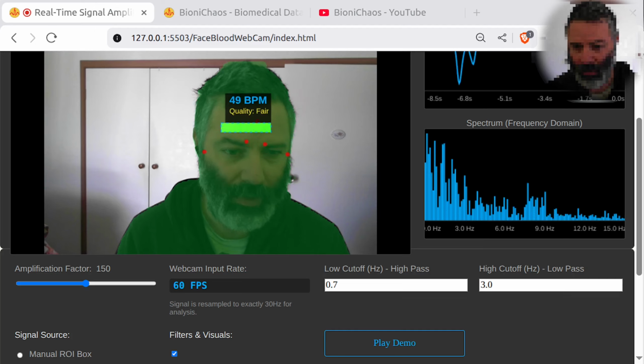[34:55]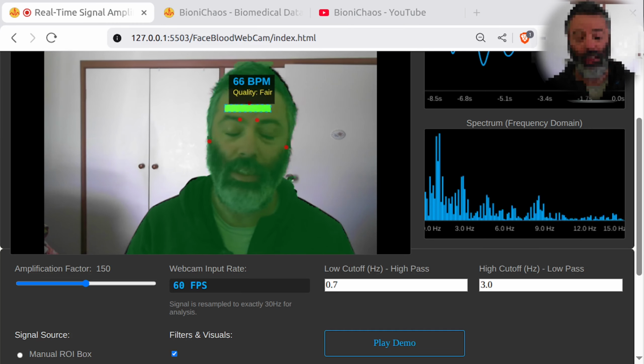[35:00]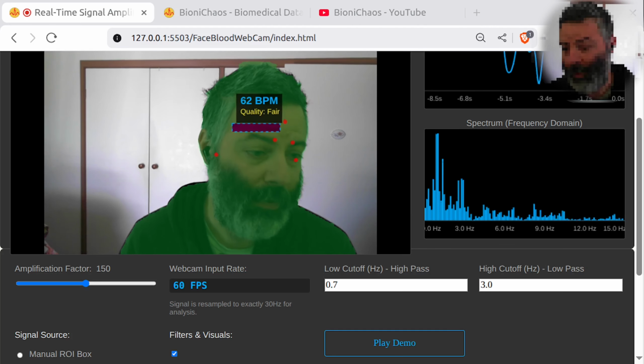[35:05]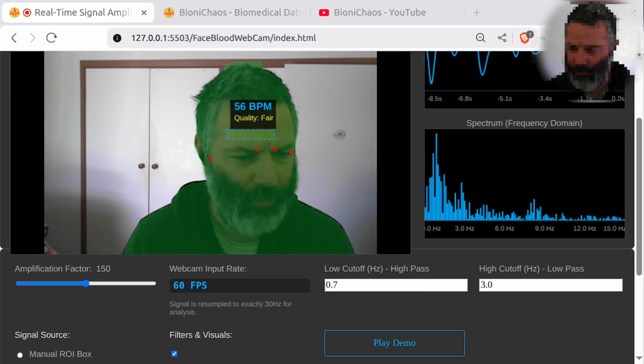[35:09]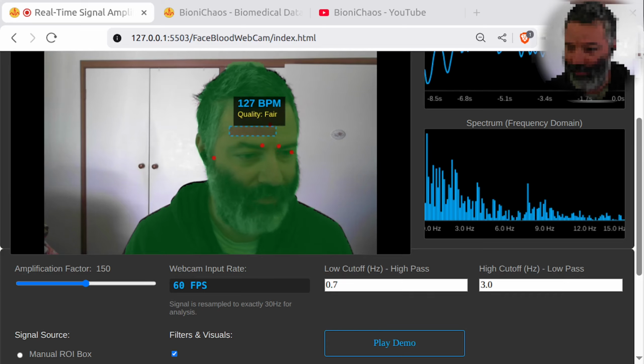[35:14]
So okay, let's see. If your camera is 60 FPS, the system takes the extra data and averages it down to perfect 30 Hertz timing. Okay, this actually results in a cleaner signal. So it's kind of assuming that 30 FPS is the minimum you've got. If your camera is 15 FPS, the system uses math interpolation to fill in the gaps between frames to maintain the 30 Hz timing required for the filters to work.
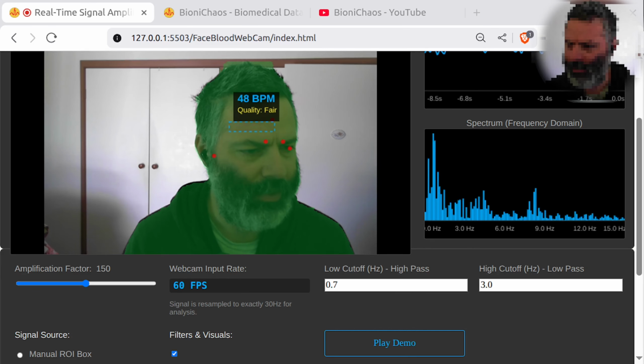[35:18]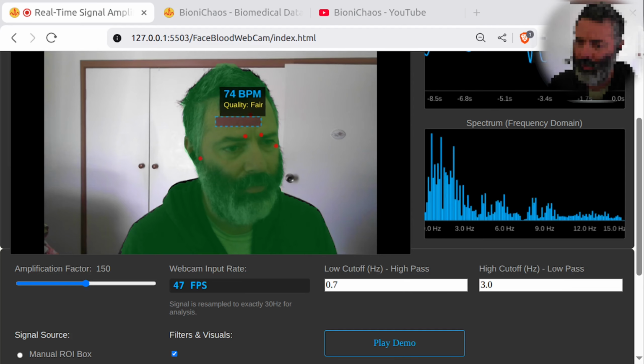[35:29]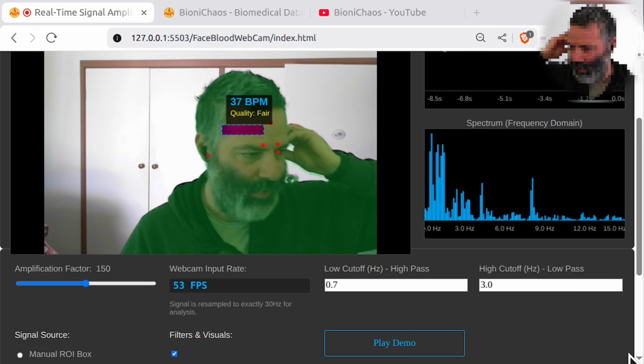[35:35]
Okay, here is complete code. I have restored the full detailed text explanation, expanded on science, added specific segment. Yeah, we already had it before. Hardware capabilities. What if my camera isn't 30 FPS? Yeah, so it will have a Q&A on the page itself.
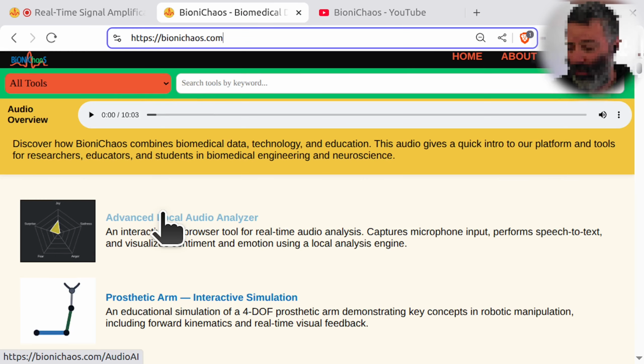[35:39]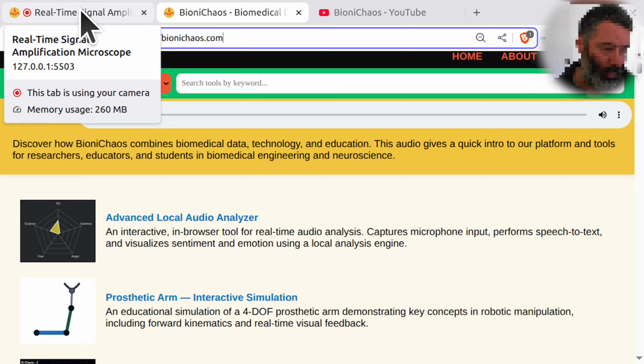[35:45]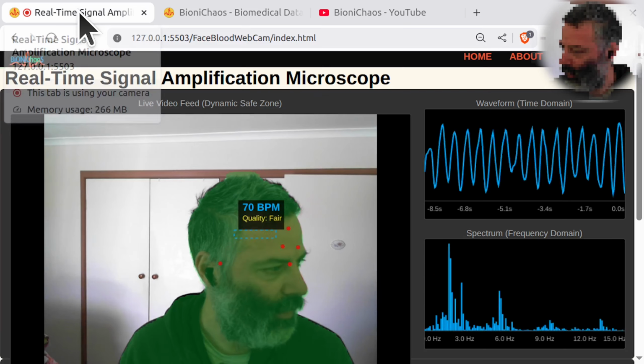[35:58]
After the live development sessions, whatever we do is being deployed on BioniChaos.com, so you can go check it out and play with the tools yourself. The source code for the more recent applications is just on the page, so just go F12. It's all JavaScript, so it should be all front end. We used to do back end stuff, but try not to do it anymore. Anyhow, complicated. Don't worry about it.
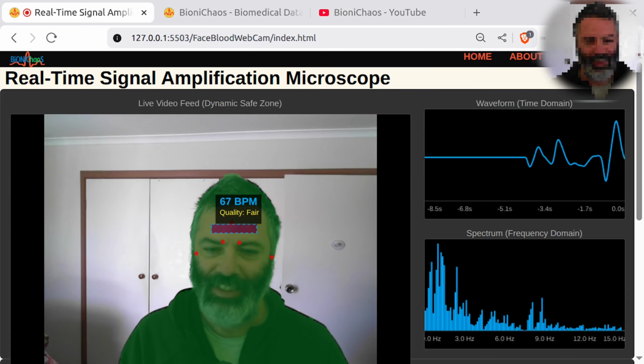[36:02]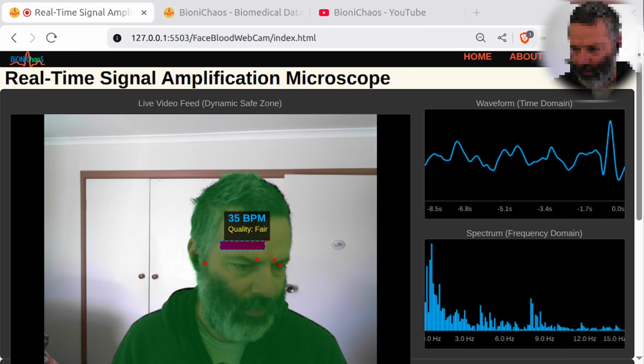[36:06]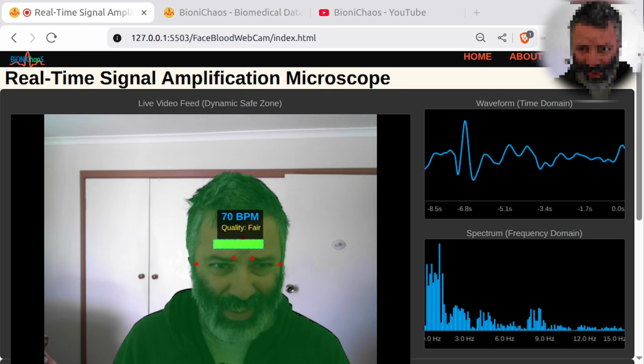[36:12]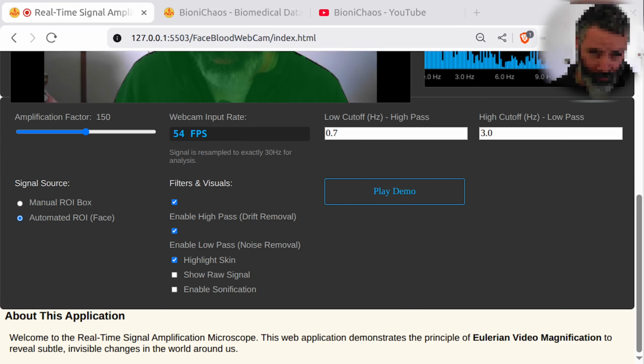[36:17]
Alright, so we added all the explanation for what happens if your camera isn't 30 FPS, and it should have all the science and so on and so forth, links and things on the page as well, which we had before. Just one of the prompt responses decided to get rid of it.
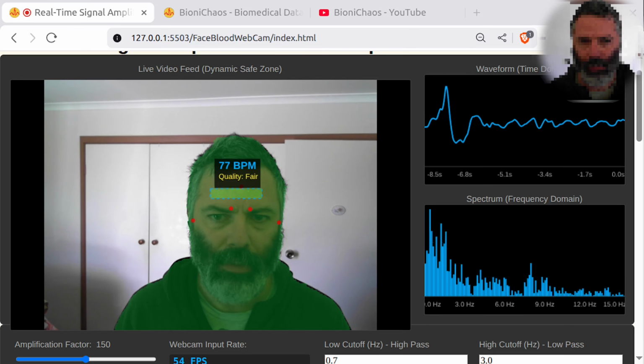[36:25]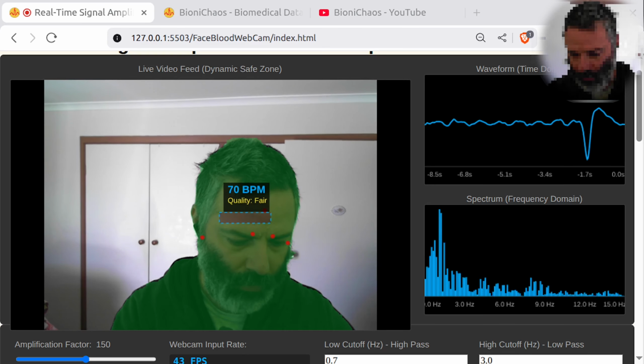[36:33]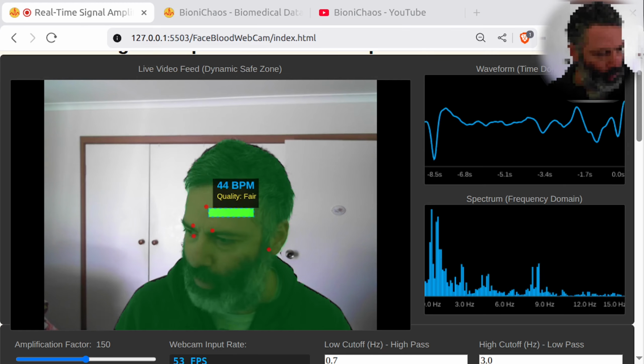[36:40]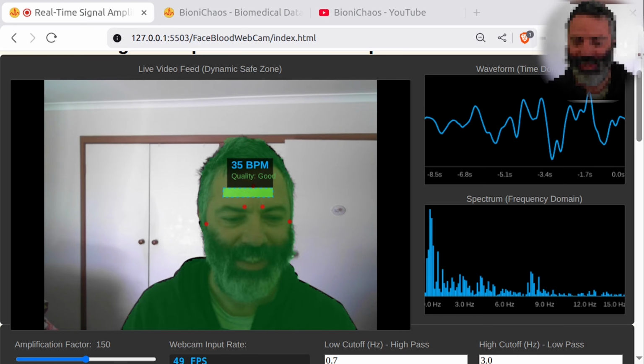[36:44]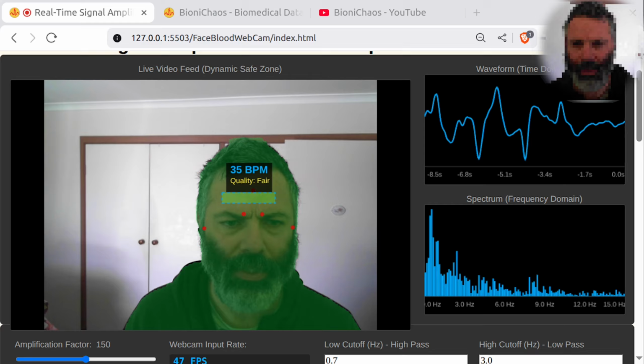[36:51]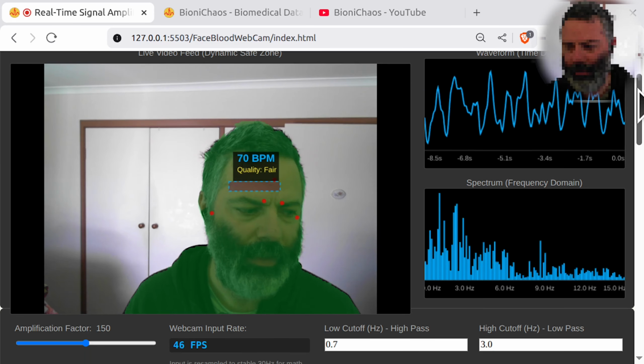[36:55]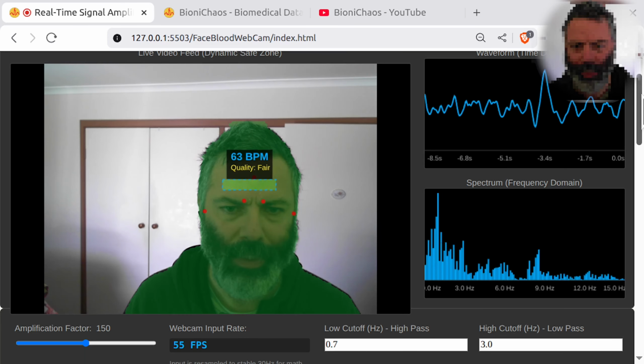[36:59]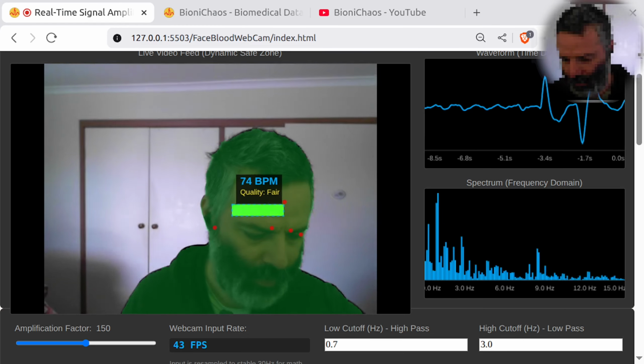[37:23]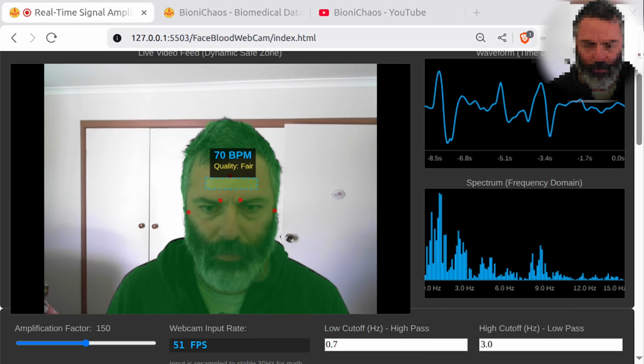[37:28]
Yes, we're getting a nice waveform. It's locking in on 70 something. Is my watch accurate? Oh, I really got going with the previous monologue. My heart rate got elevated by 10 beats per minute. It's like 80 now. But wait, what's the measurement showing? Because we're still testing it. Now it should not be affected by the frames per second. 77. No, it's locking in on 70. Am I back to 70? Yes, I am back to 70. Okay, we solved that problem.
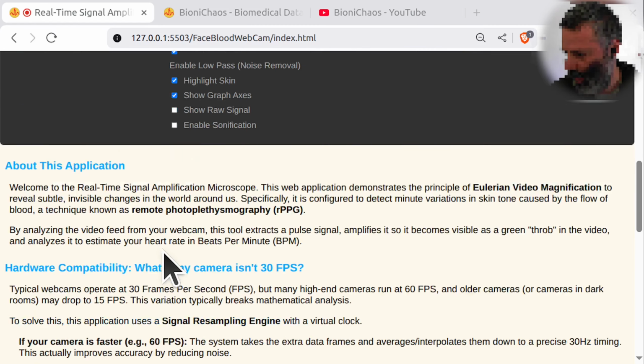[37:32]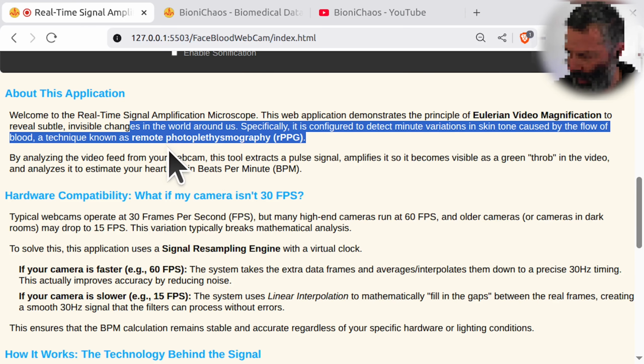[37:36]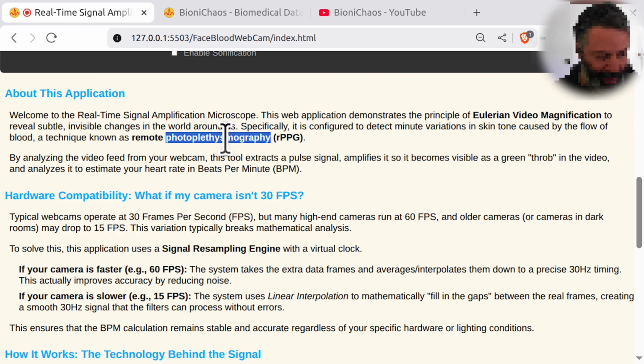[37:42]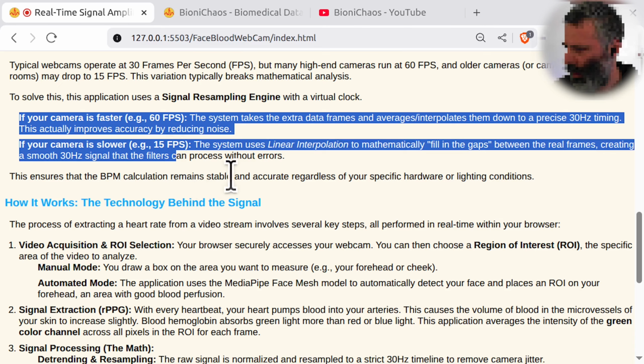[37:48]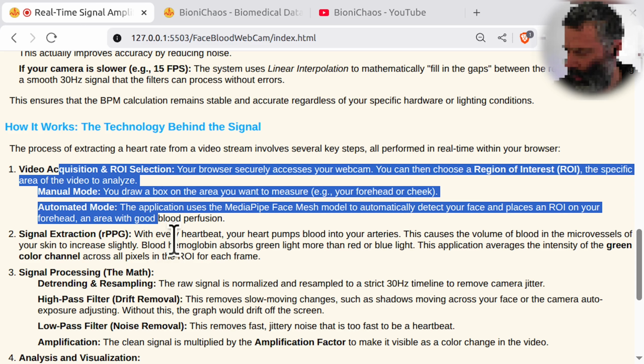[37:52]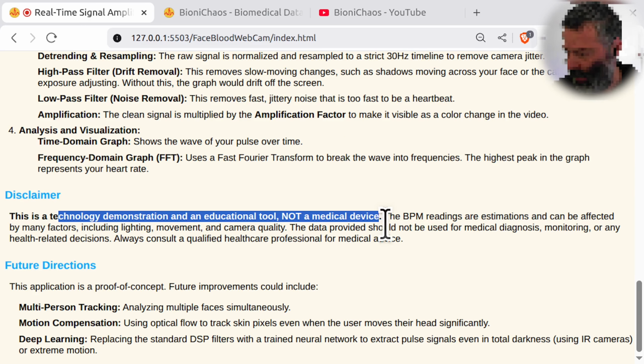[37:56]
Okay, we have the explanation. Okay, hardware capability about this application. Yeah, it's remote photoplethysmography. Don't try pronouncing it at home. Your tongue will get twisted and fall out eventually. Okay, if your camera is faster, if your camera is slower, how it works, ROI selection, disclaimer, demonstration and education, not a medical device, yep.
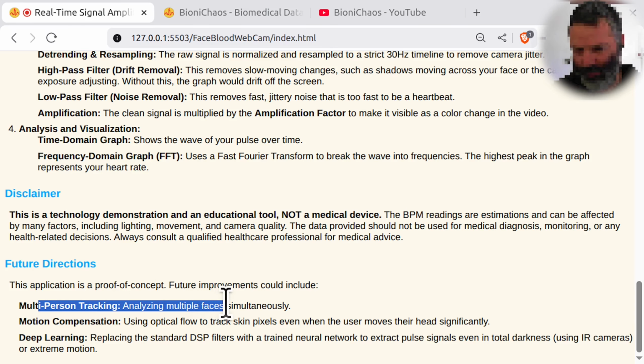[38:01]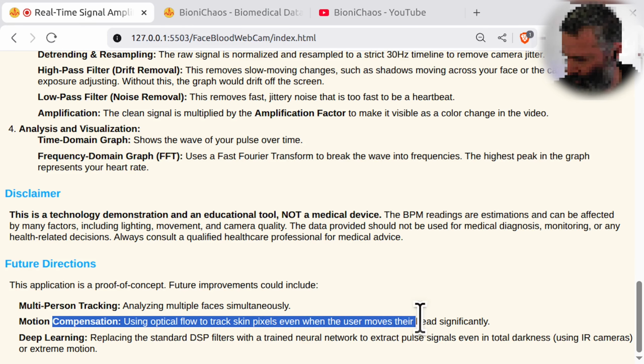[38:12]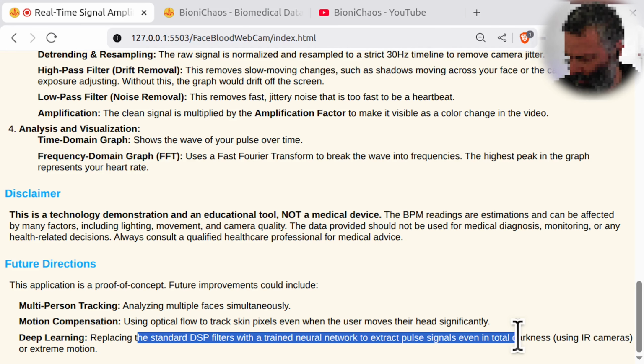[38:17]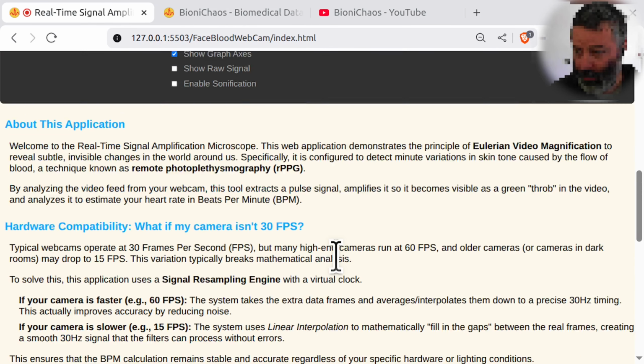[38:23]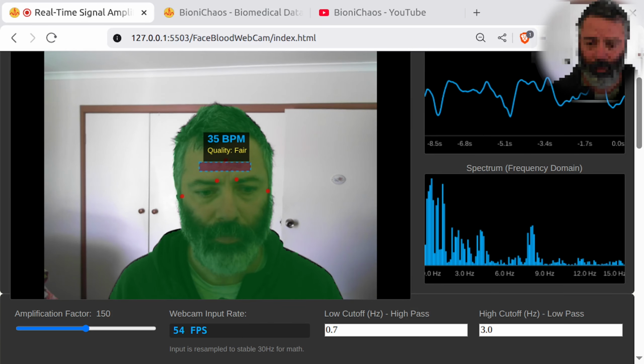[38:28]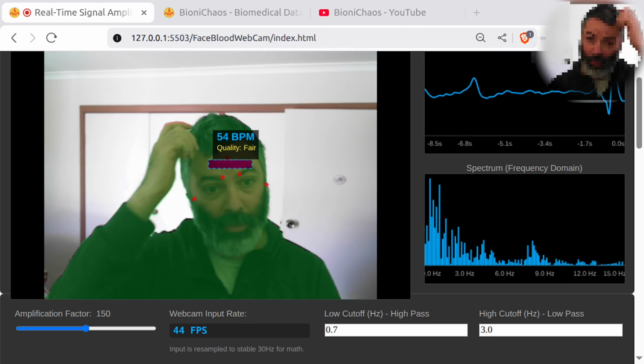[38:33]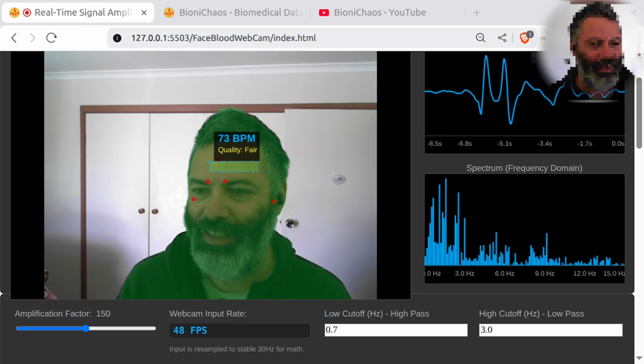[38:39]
Future direction, multi-person. Why would you do multi-person? Like in a crowd situation. Motion compensation. Okay. Deep learning, of course. Infrared cameras, okay. Yeah, if anyone wants to send me an infrared camera, I could do something useful with it for sure. But I don't have one handy. Thermal cameras, any sensors, any medical sensors. Send them all.
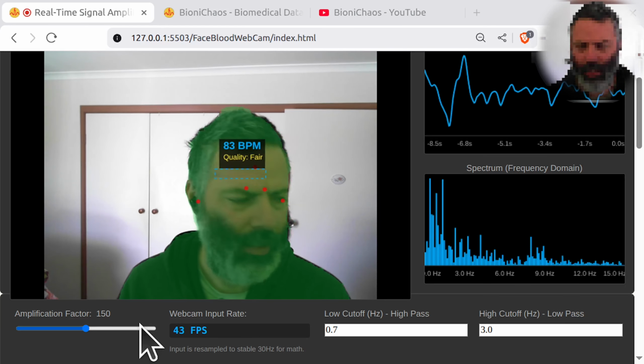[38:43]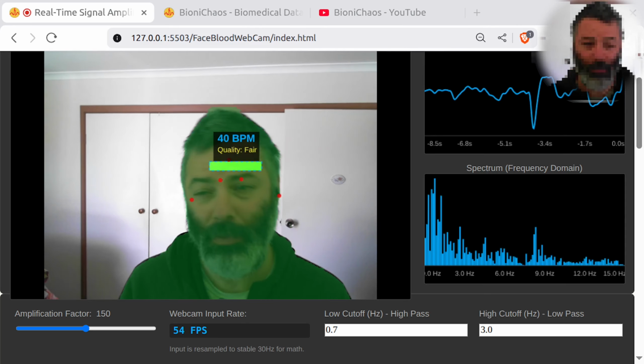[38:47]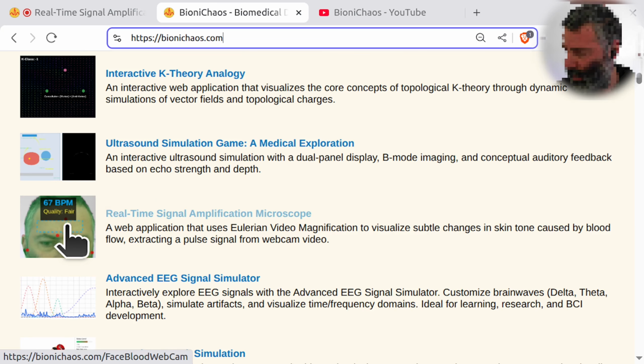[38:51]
Anyhow, we might finish at this. We actually fixed it. We'll be testing. We'll deploy it. You'll be able to find it on the site. Should be links everywhere.
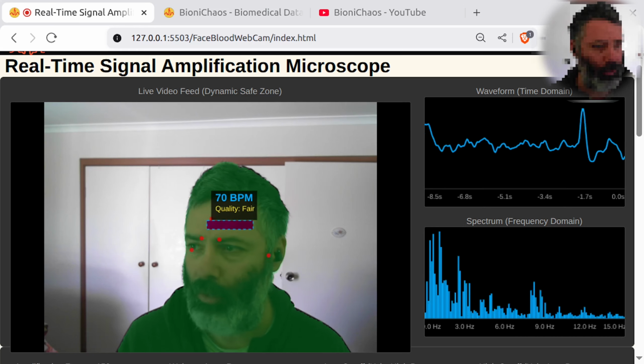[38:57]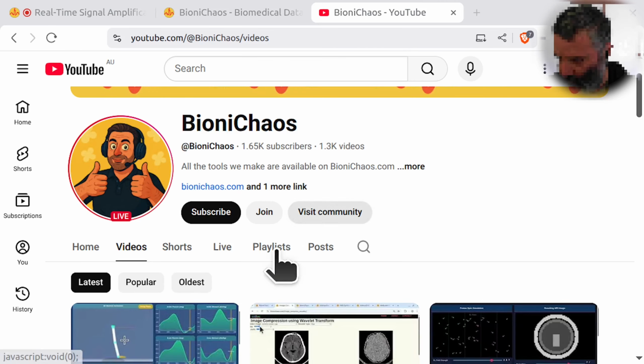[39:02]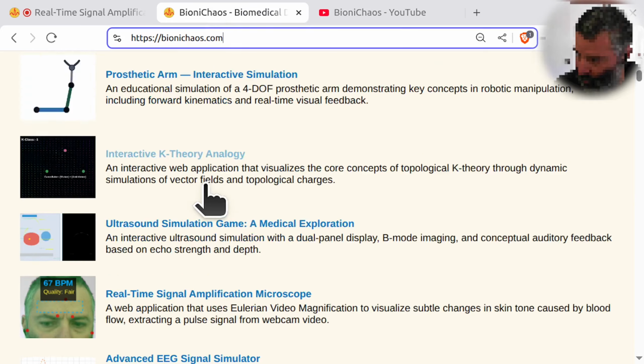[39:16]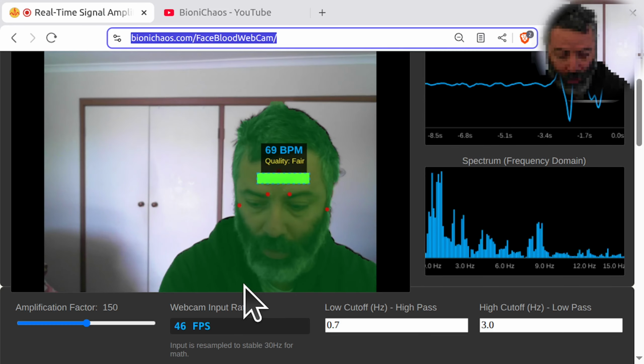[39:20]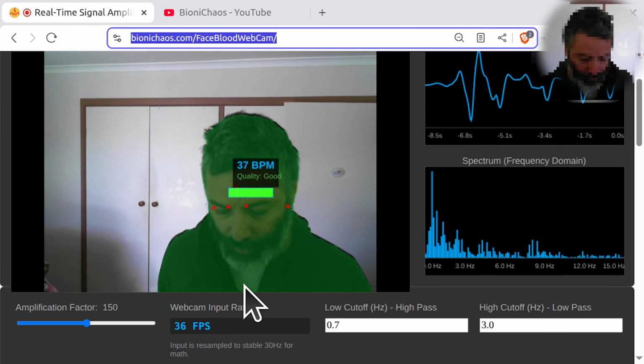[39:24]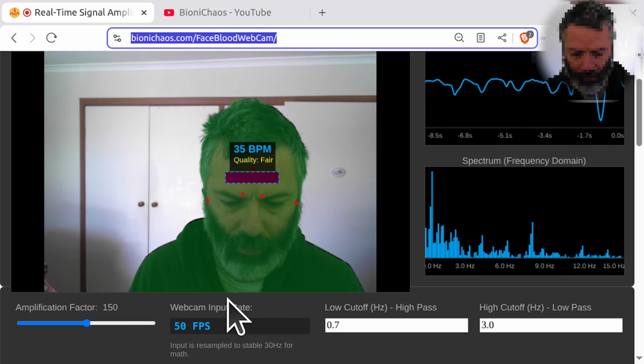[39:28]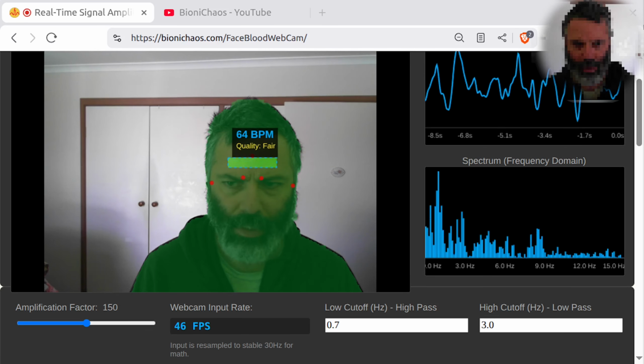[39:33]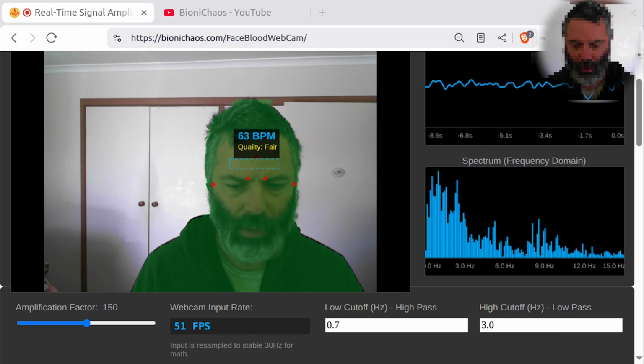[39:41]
Holding it doesn't help. You actually have to somehow make sure it's stationary. That helps as well. Yeah, I get the 70. Okay, so we fixed the FPS handling, and now it should work better on any device, regardless of your actual fluctuating frames per second. It should still give you an accurate beats per minute reading.
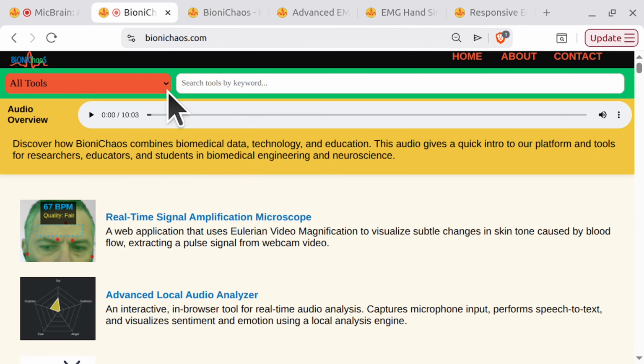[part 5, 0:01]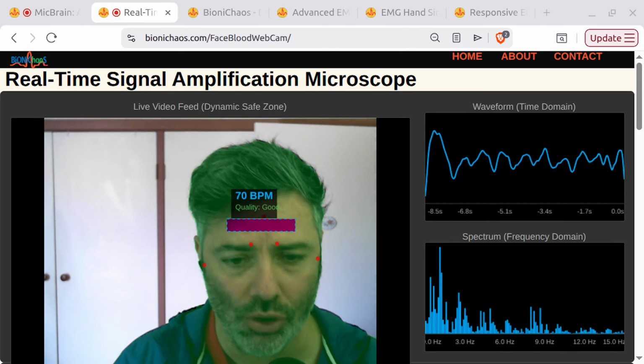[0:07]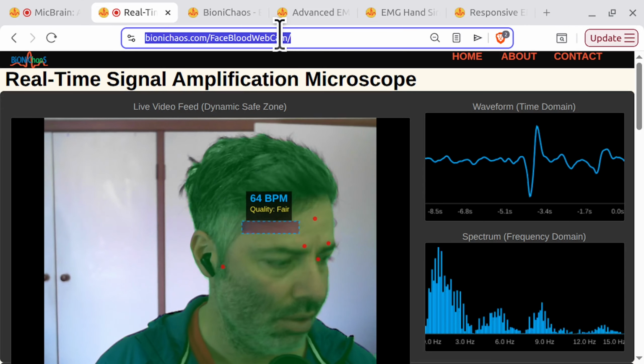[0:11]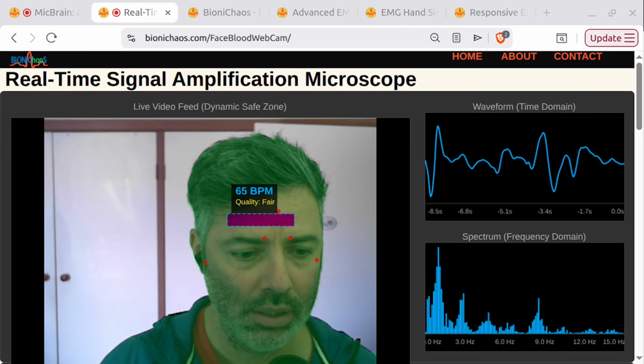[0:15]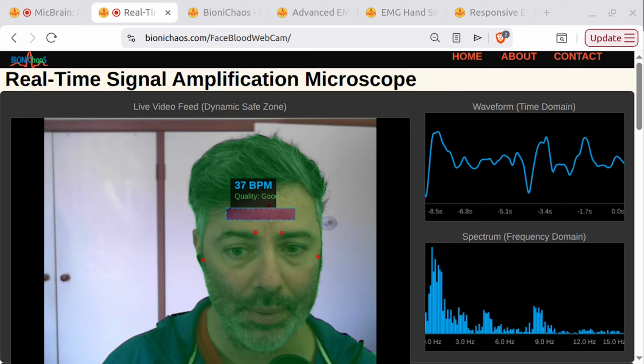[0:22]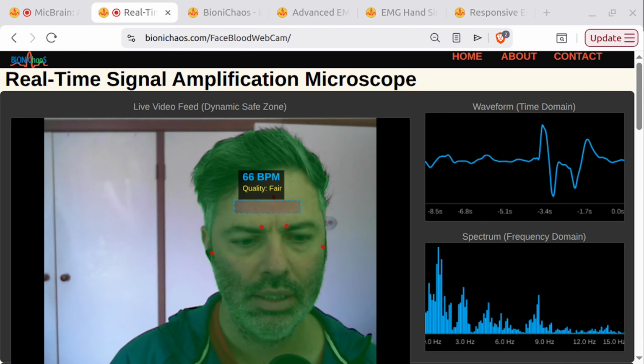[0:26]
Go check them out. So first of all, hopefully you know what this is. If you don't, go check it out. This tool is running on the side. It's measuring your heart rate variability through the web camera. You kind of need to make sure there's no hairline.
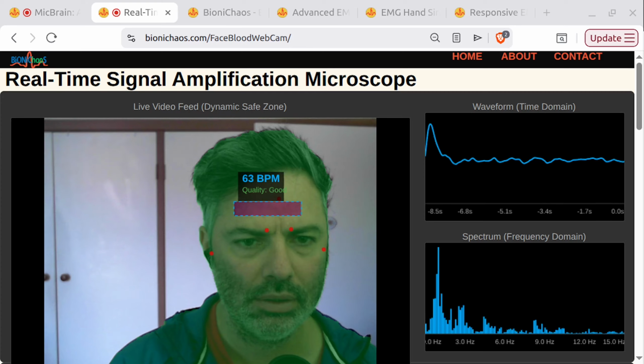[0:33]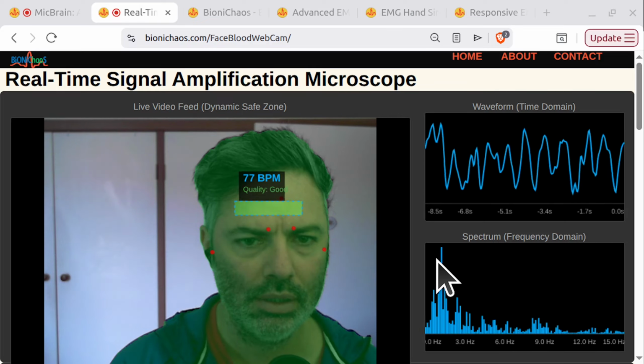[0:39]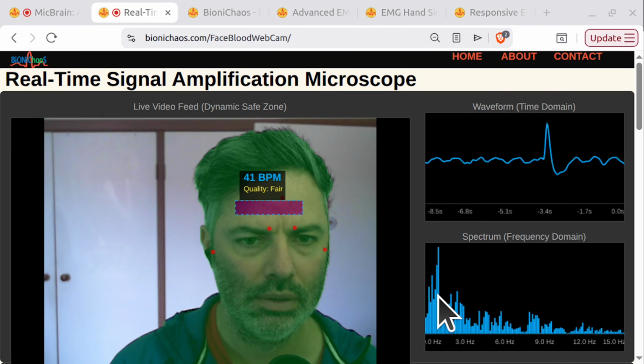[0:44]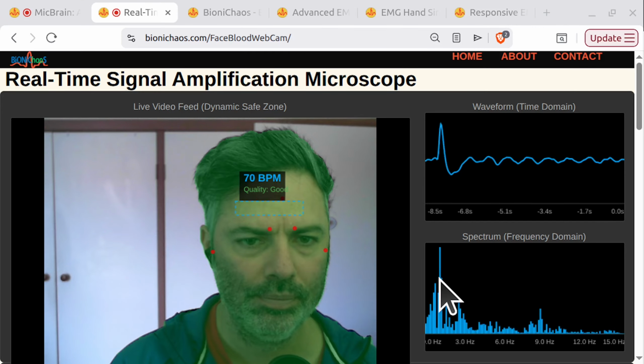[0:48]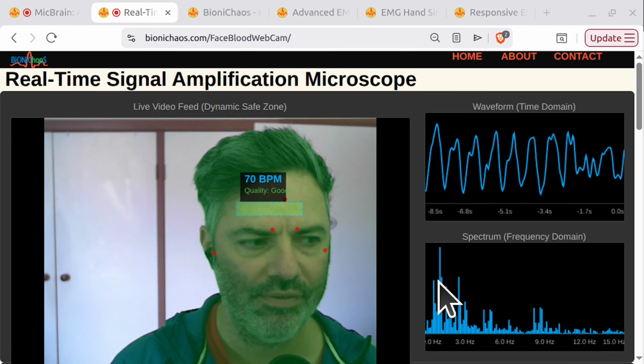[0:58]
Control for light. Don't move for a bit, and we'll give you a measurement. It's that peak there. You're getting a strong 70 beats per minute measurement, and I feel like it's about right.
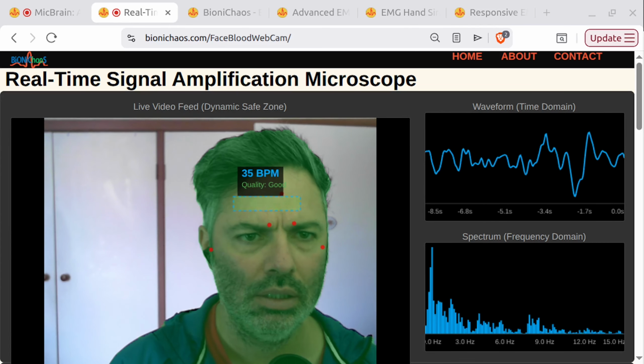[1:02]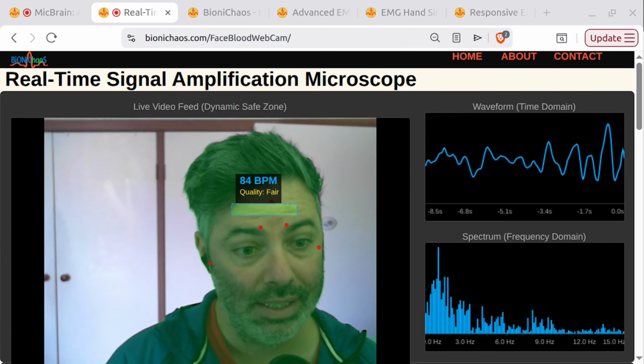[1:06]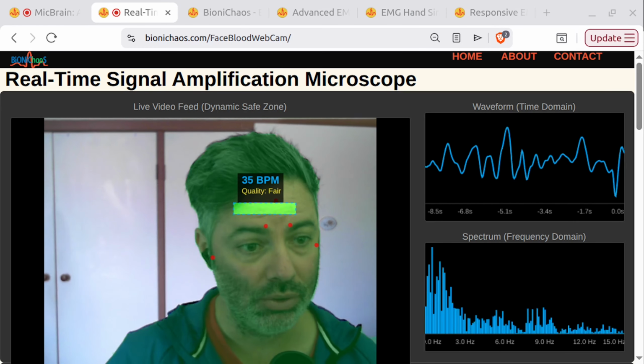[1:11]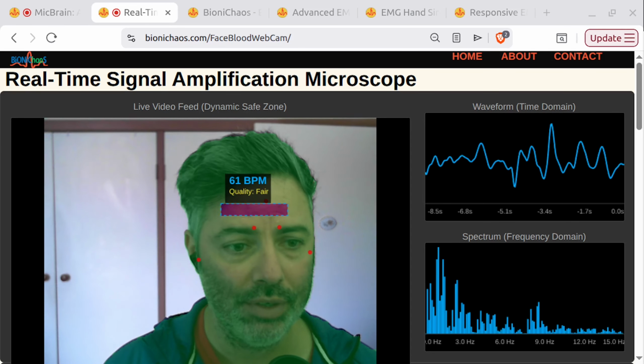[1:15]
Normally I compare it to the smartwatch, but then the smartwatch could also have an error, so if anyone wants to send me a chest strap or a better, more accurate device, you're more than welcome to.
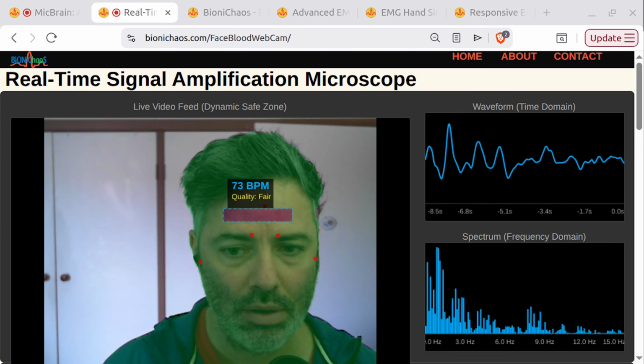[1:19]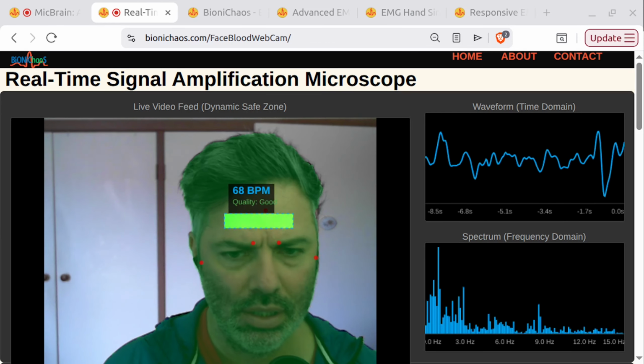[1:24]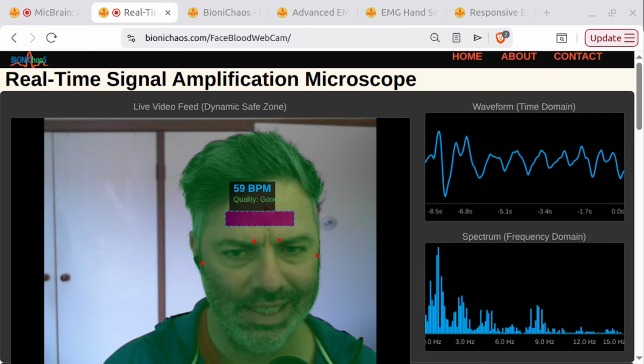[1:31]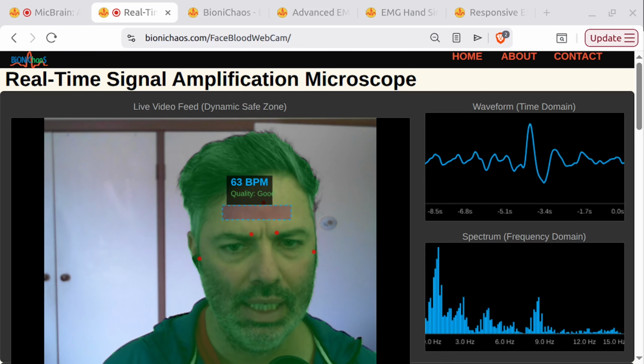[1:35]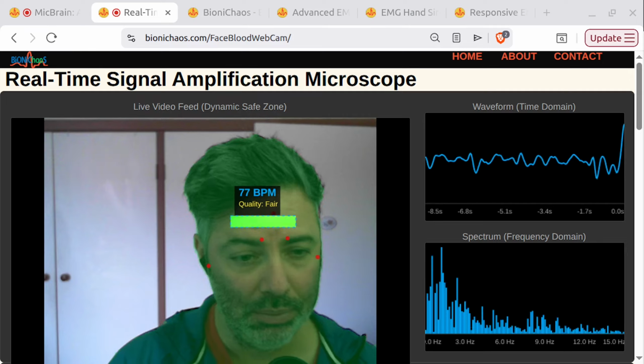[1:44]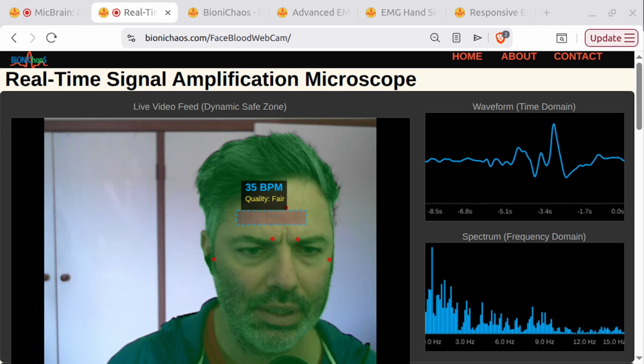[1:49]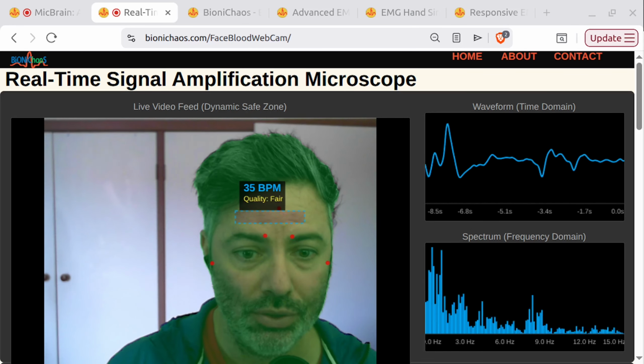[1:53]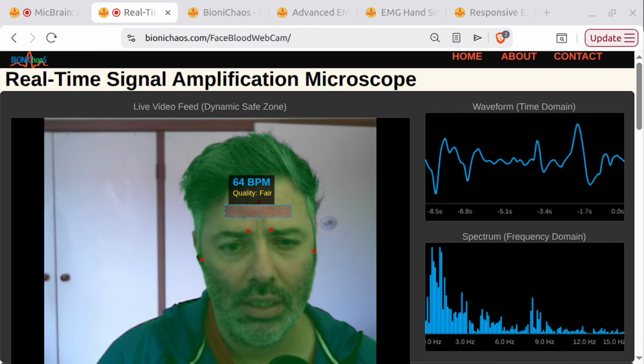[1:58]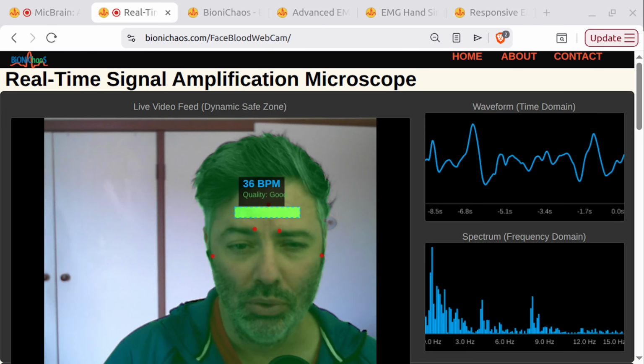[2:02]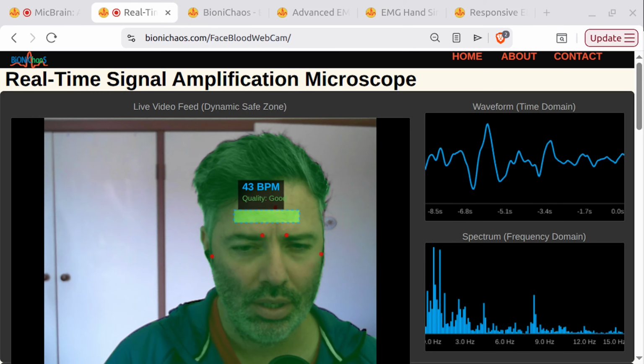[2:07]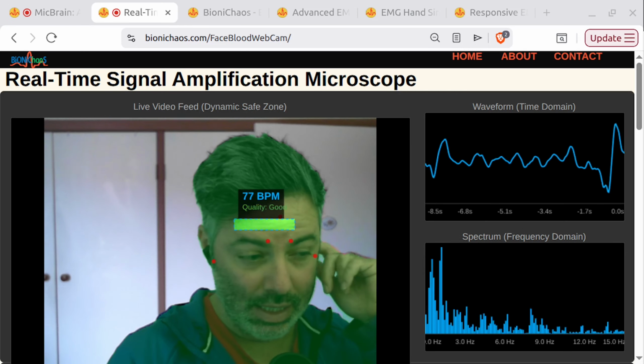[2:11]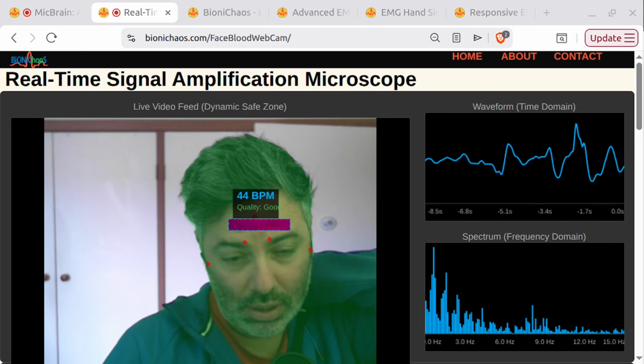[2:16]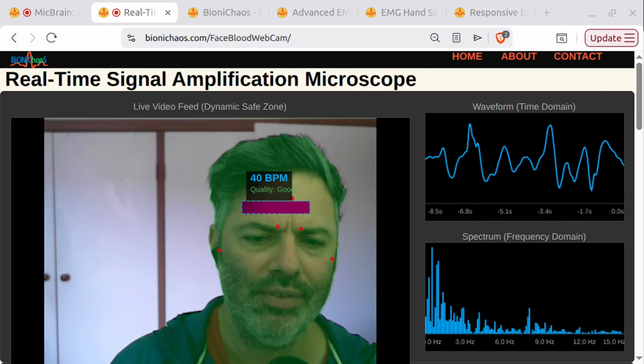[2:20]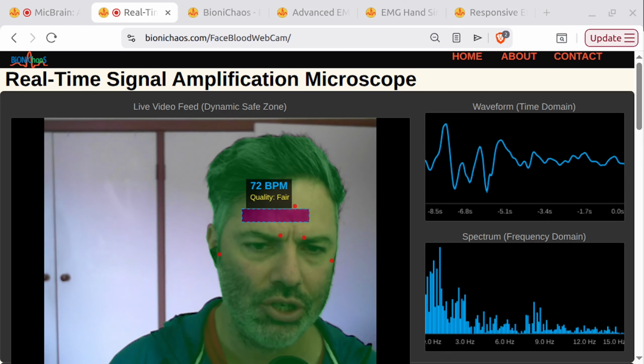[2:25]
And the question that we have is asking, what specific characteristic of blood hemoglobin allows for the extraction of a pulse signal from a standard green color channel in the rPPG, remote PPG, out of this tool? Let's see if we can get it correct, because we designed this tool, so we should be able to answer it correctly. Option A: hemoglobin absorbs green light more significantly than red or blue light. Option B: hemoglobin reflects green light during peak systolic pressure.
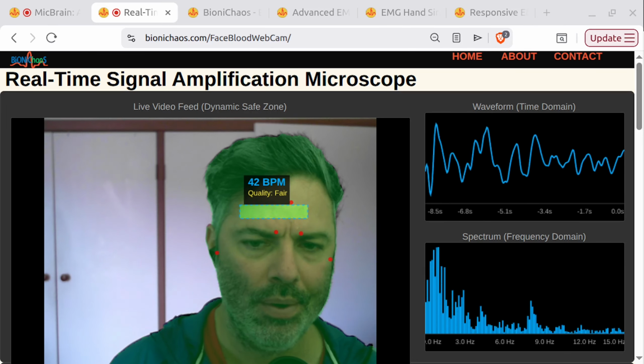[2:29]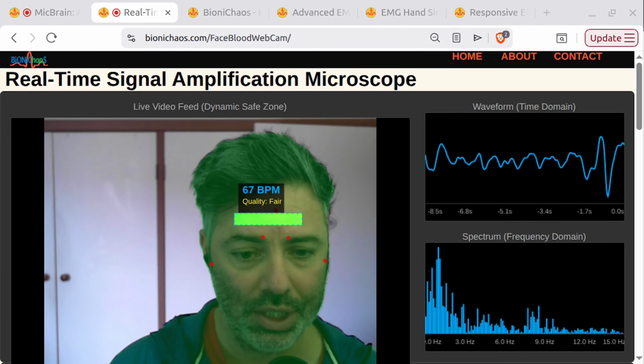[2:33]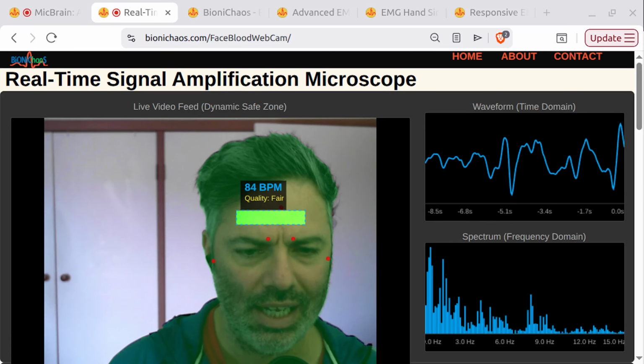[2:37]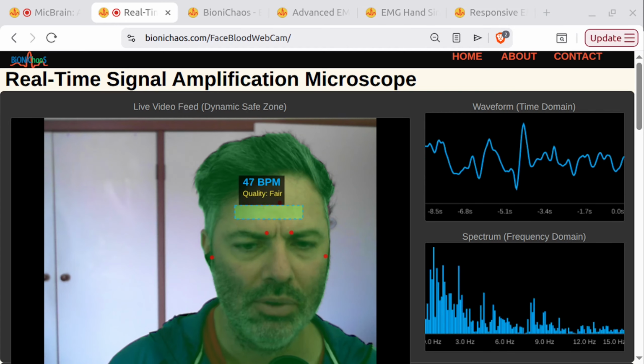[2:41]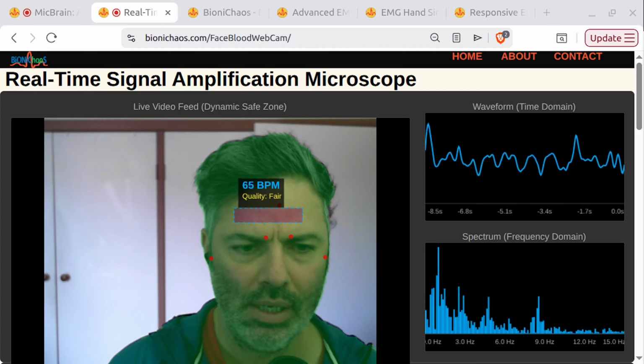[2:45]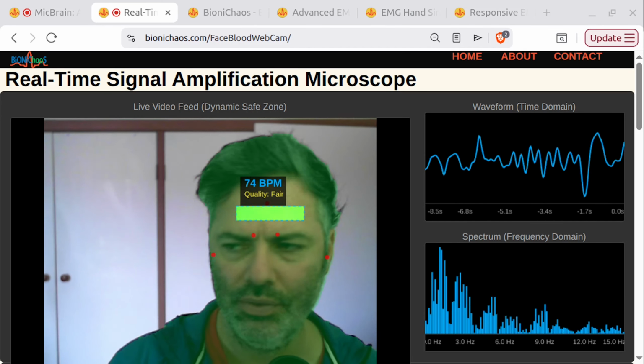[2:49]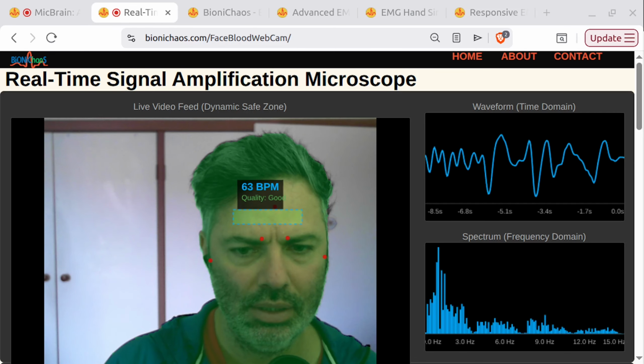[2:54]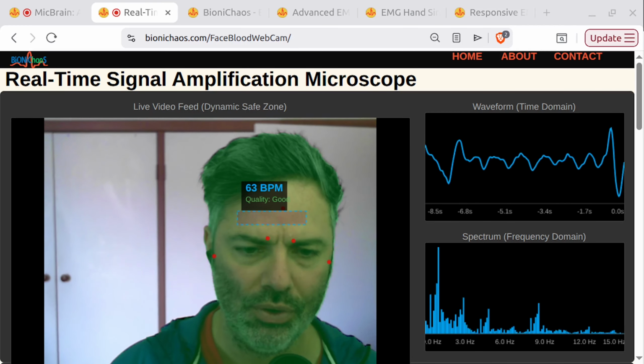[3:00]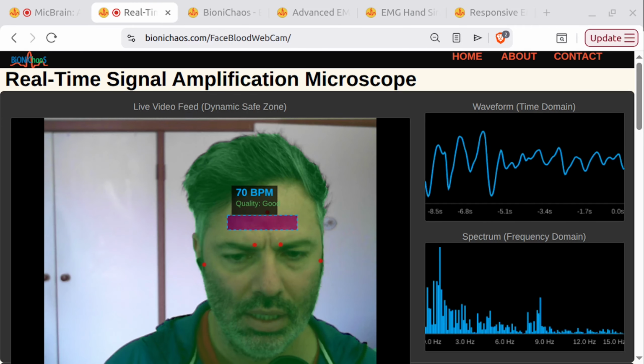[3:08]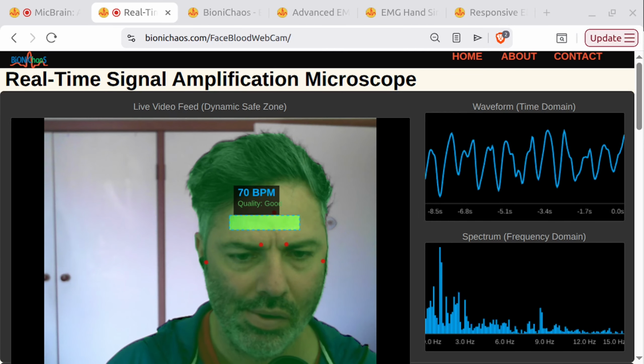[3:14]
Not sure actually. And C, green light has the deepest tissue penetration among visible wavelengths. I don't think it's C. Reason being that we're looking at reflection, so I'm not 100% sure if it's not C. Let's read D for a sec. The green channel is the only one not affected by melanin levels in the skin. This is crazy, I don't actually know. We have a hint. Consider how the concentration of blood in skin vessels affects the light that the camera perceives.
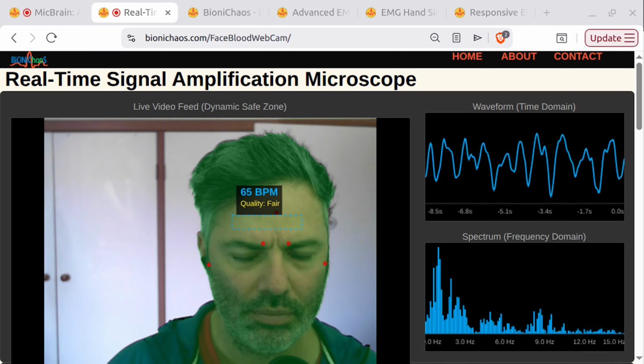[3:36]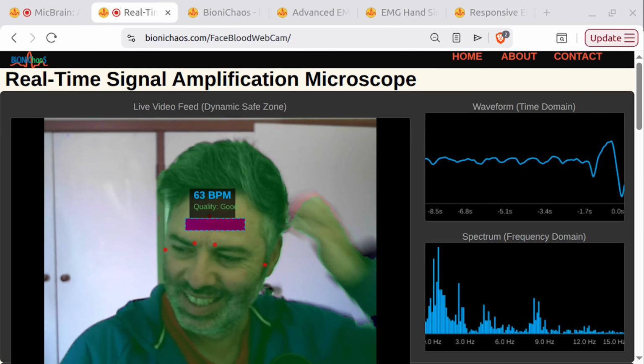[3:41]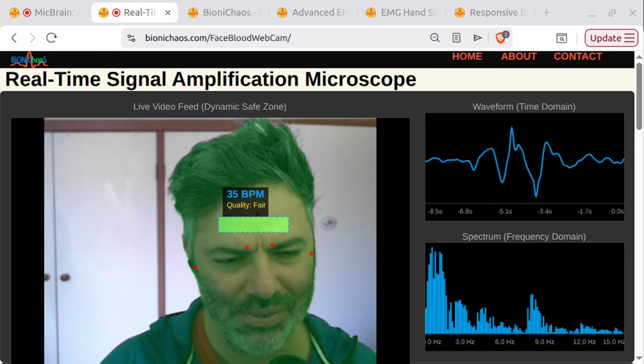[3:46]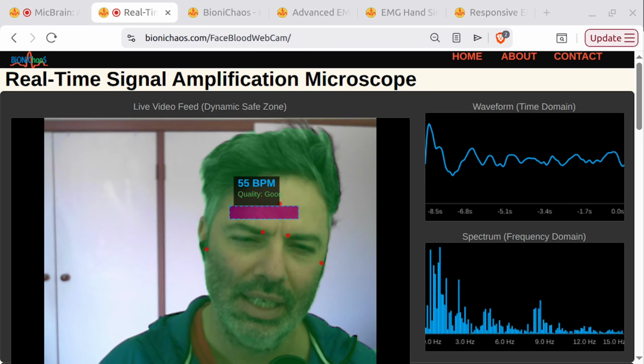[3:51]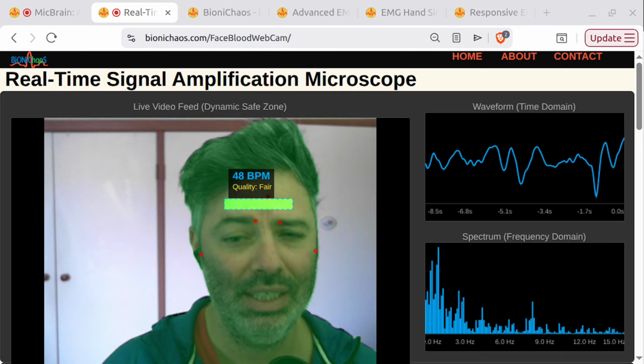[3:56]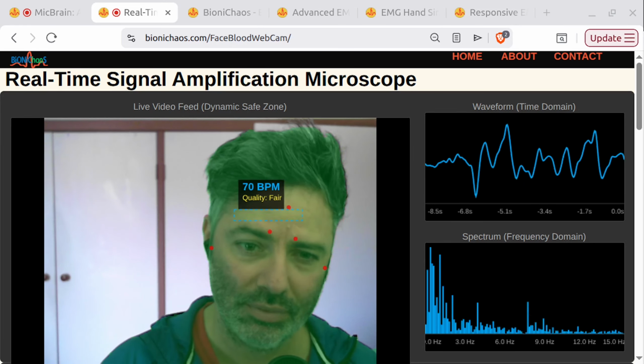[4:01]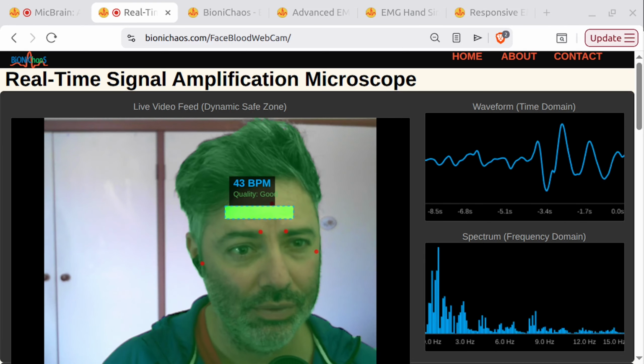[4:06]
Concentration of blood in skin levels affects the light. Is it A? Yeah, it's A. I did kind of guess. I mean, all the options, I kind of knew it's not C or D. I wasn't sure. Yeah, so A is correct. Hemoglobin absorbs green light more significantly than red or blue light. So that's why we're extracting the green channel out of the video footage.
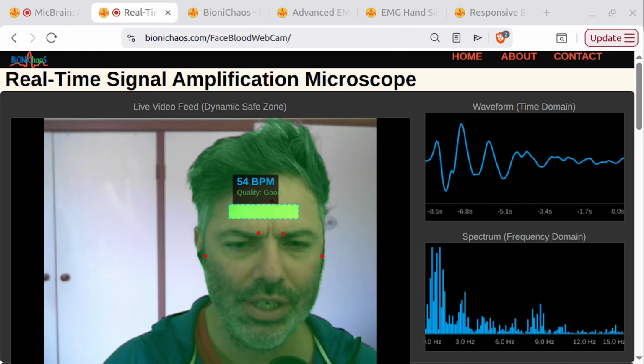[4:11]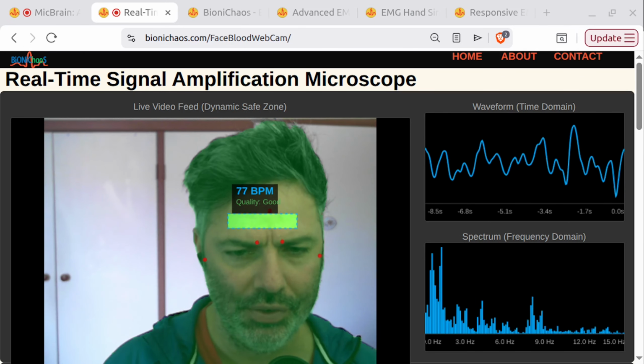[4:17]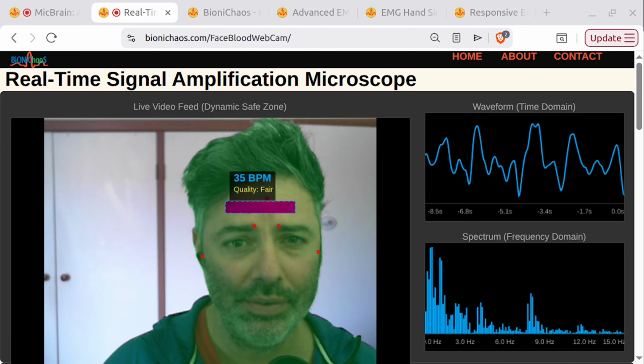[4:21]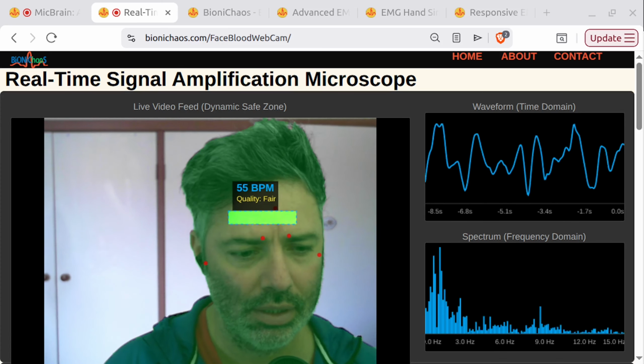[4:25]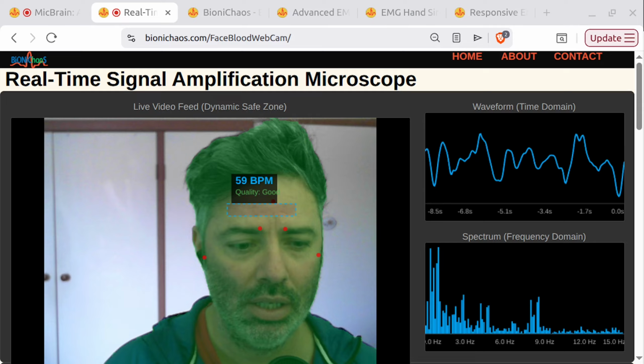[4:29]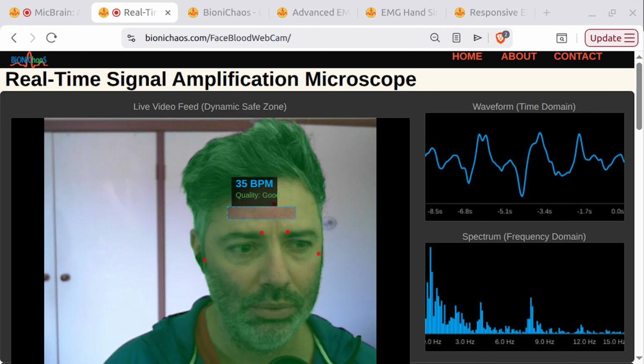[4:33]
The fluctuations in blood volume during a heartbeat cause measurable changes in green light absorption, which forms the basis of the pulse wave. And that's that wave there. So that was a really good question, brought to you by a Gemini model through Notebook LM.
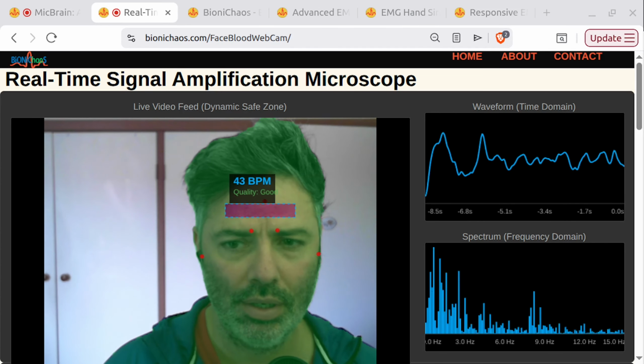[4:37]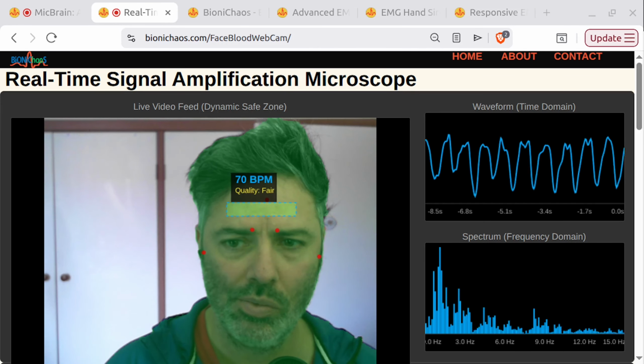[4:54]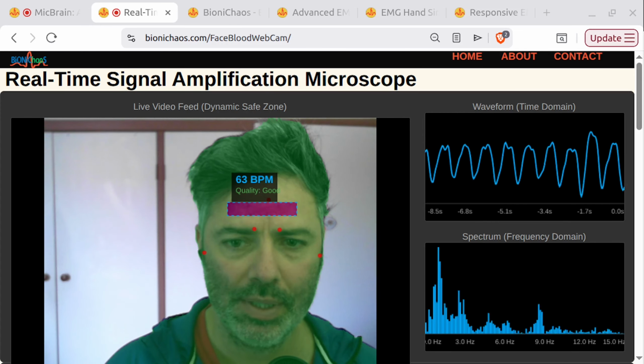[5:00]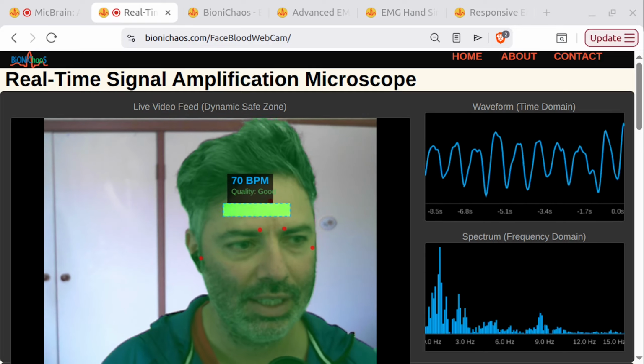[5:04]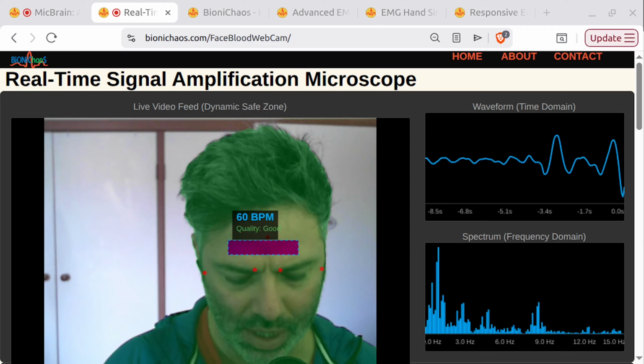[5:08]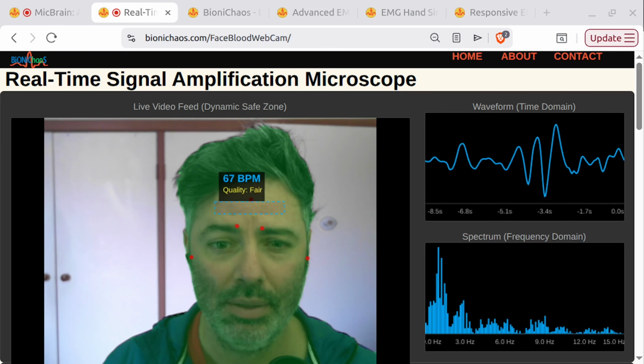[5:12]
Should we go for another one? Does answering the questions elevate your heart rate? If the question is too hard, would your heart rate increase? Maybe, probably.
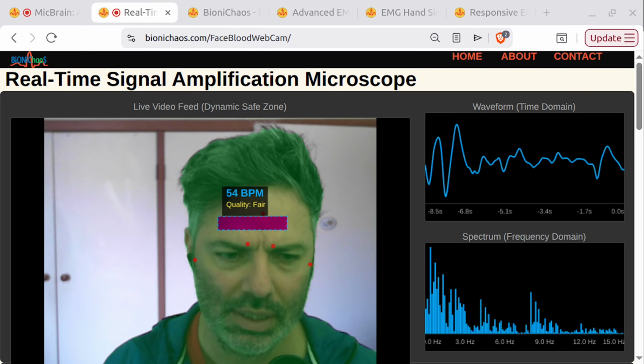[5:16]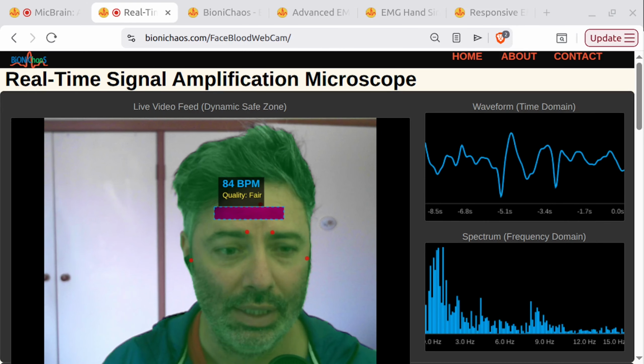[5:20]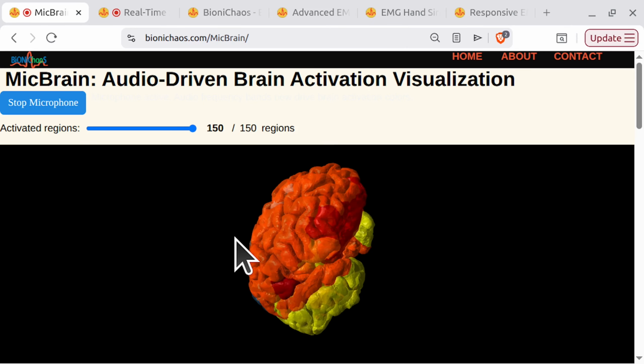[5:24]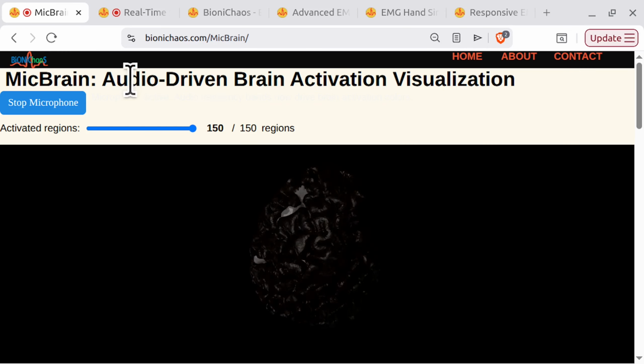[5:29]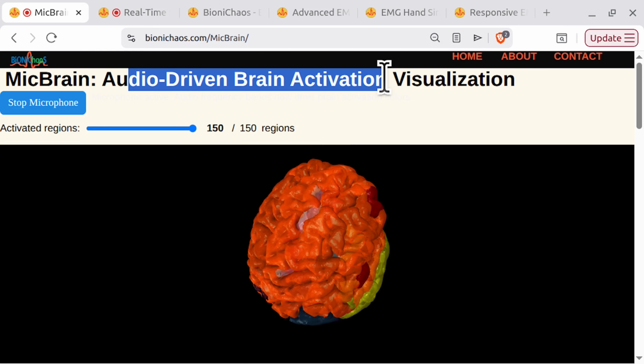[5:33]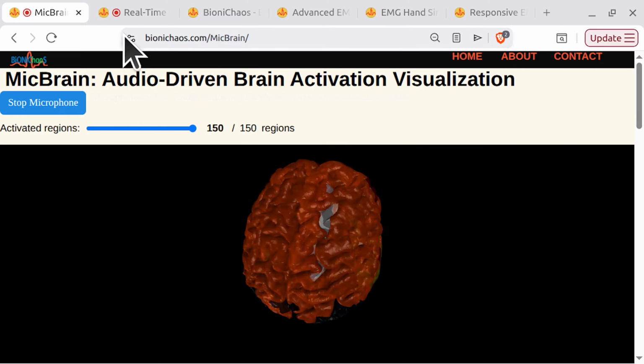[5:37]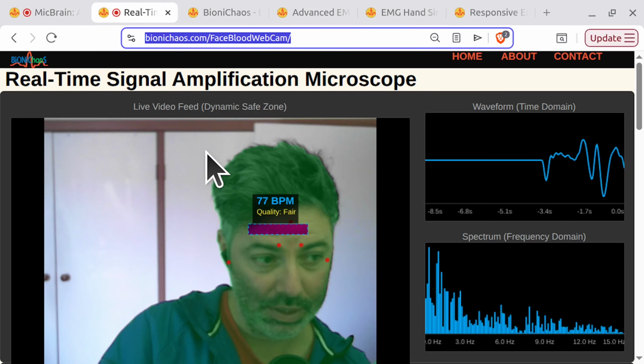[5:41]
We have another question about the same tool, this one that you can see on your screen. And go check it out as well. Everything we do is available on bionichaos.com. This was the last edition. This tool is turning your sound coming through the microphone into brain activation. So go check it out. Everything else we do is available on bionichaos.com as well.
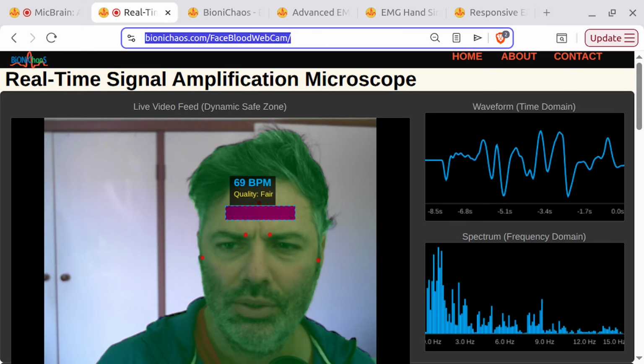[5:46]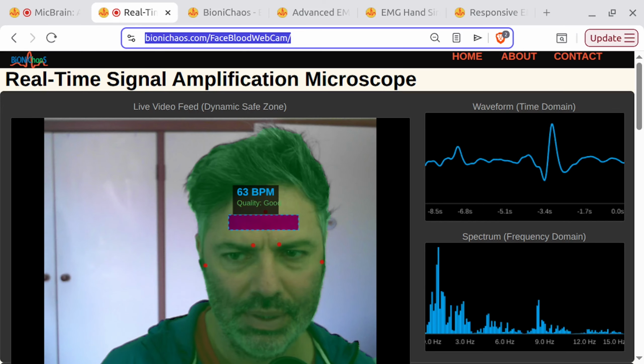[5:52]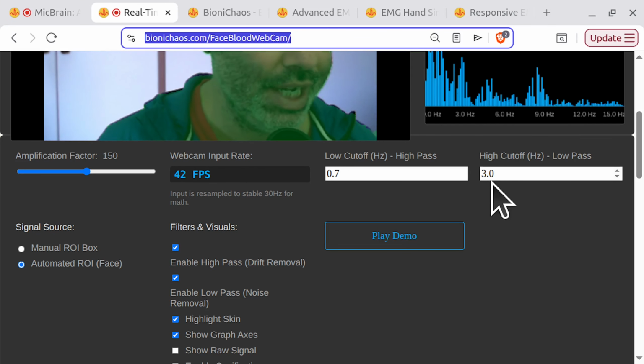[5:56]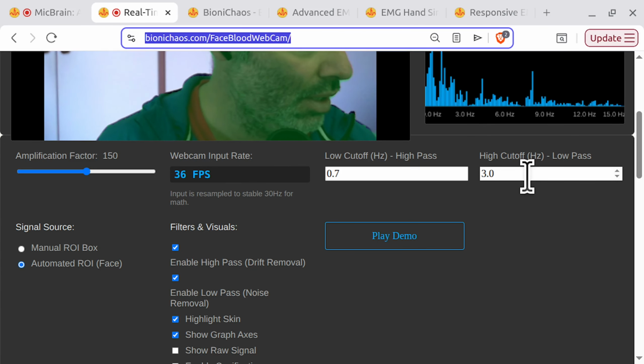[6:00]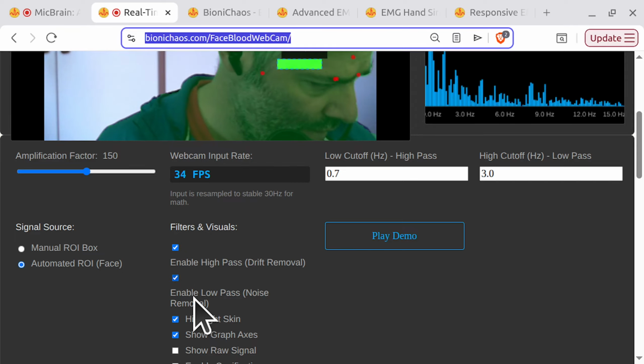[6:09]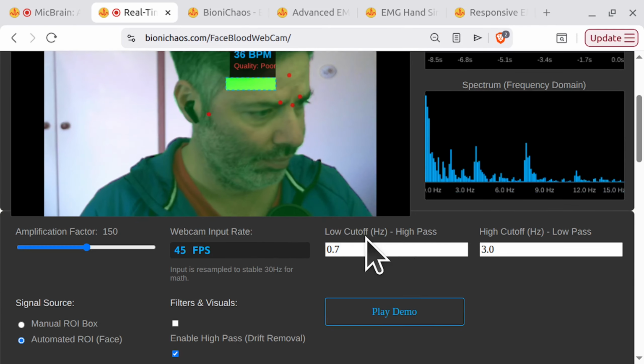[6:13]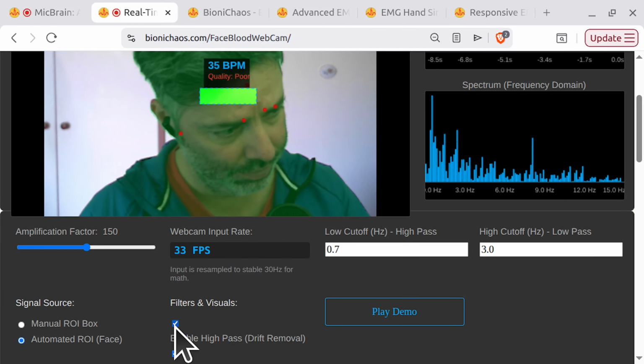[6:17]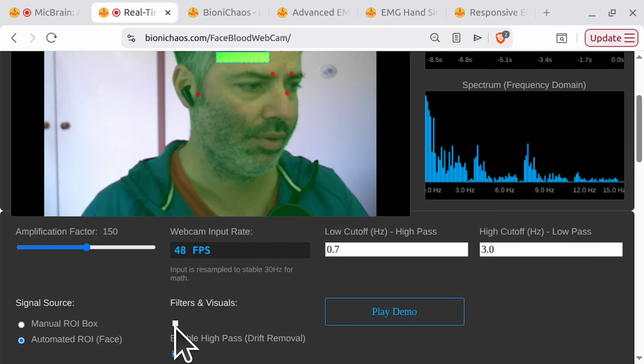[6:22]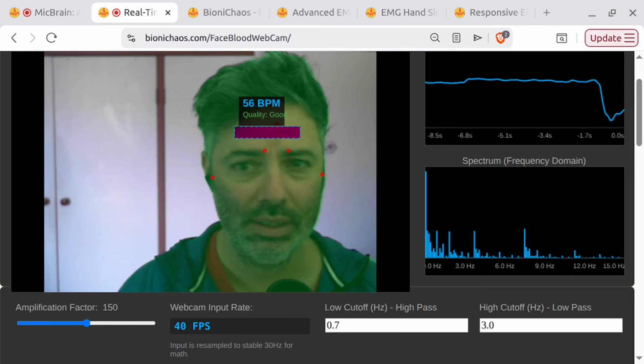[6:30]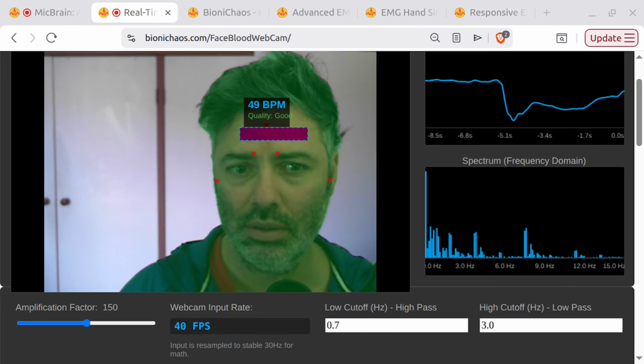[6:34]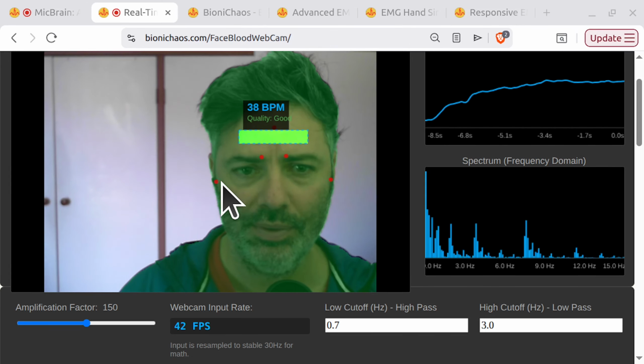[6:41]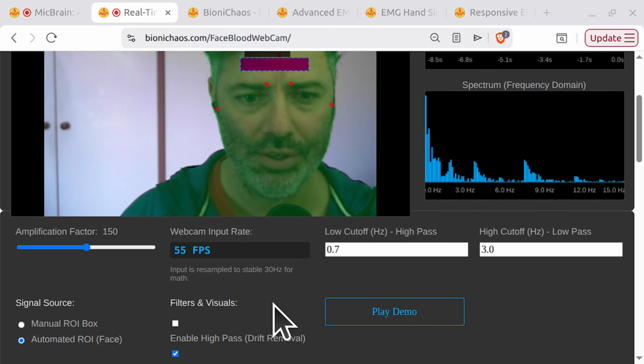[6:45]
There's another question about this tool. What is the primary function of the high-pass filter in the real-time signal amplification microscope, which is this tool? We can, by the way, change the high-pass filter settings. So it says here, yes, if you remove it, you can kind of see the change. So we get a noisier signal, do we? Yeah, when removing the high pass, and now we have this DC drift, and we can make a calculation.
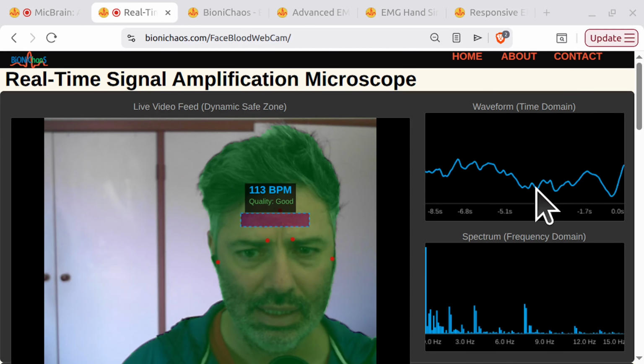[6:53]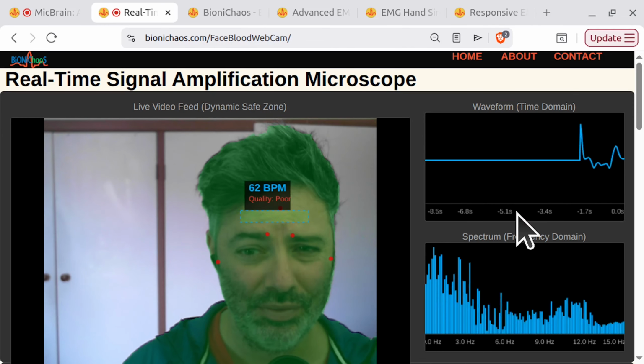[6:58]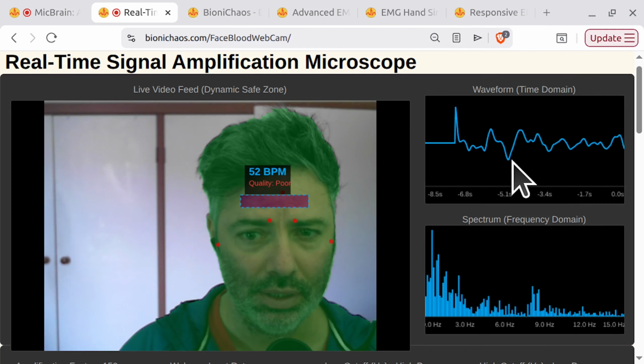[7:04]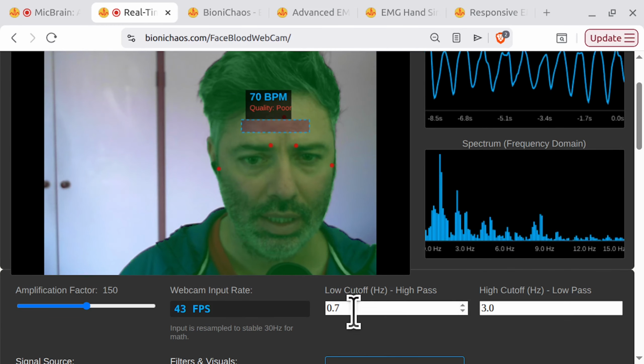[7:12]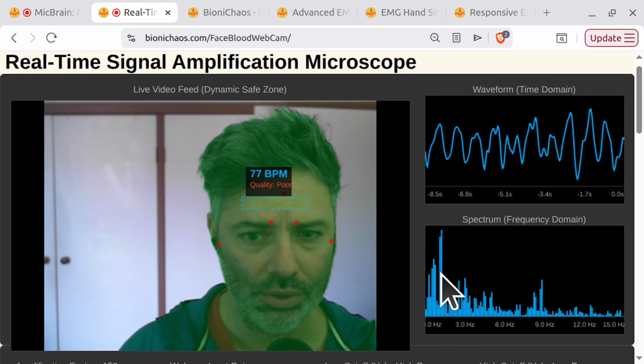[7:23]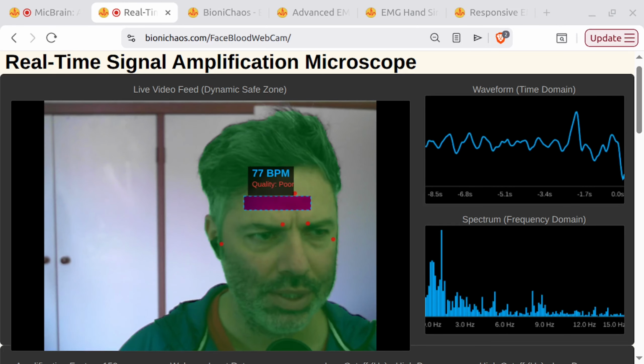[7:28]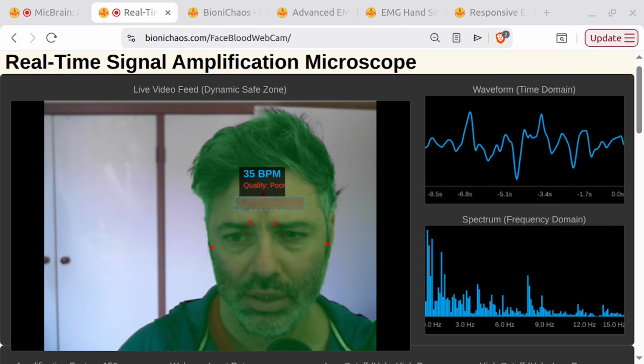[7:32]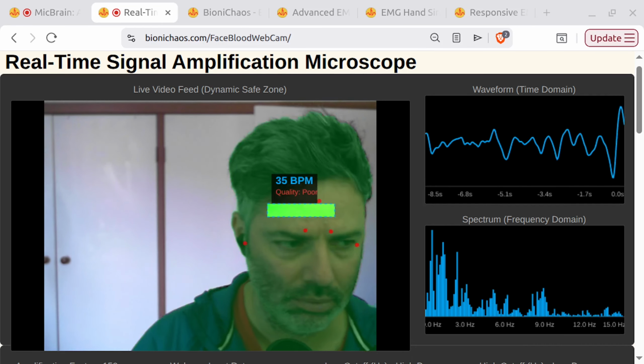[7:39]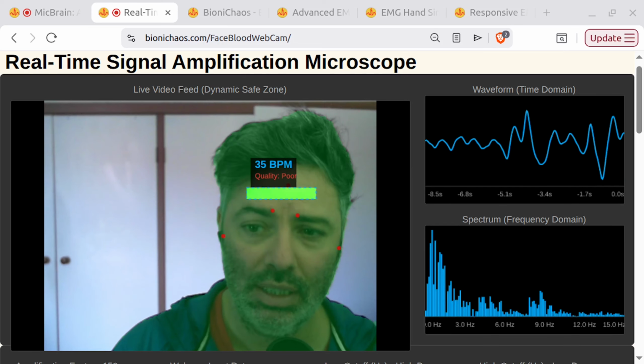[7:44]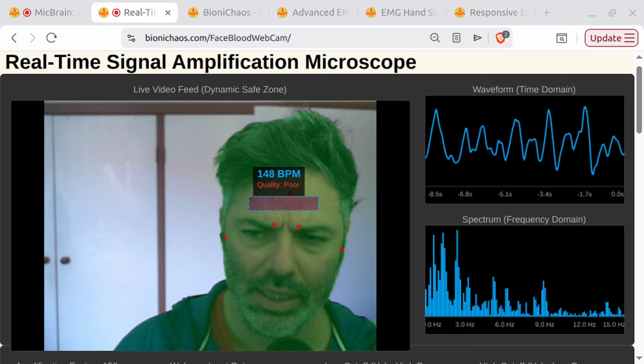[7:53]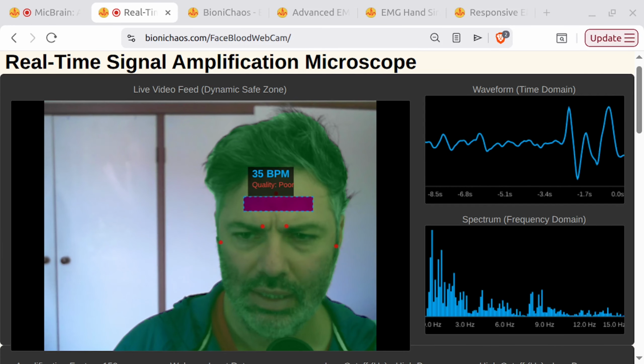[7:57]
So let's look at the question and try and answer it correctly. What is the primary function of the high pass filter in this tool? To isolate the dicrotic notch in the PPG waveform. Kinda, but I don't think it's accurate. To remove slow drifts, that sounds like it. To remove slow drifts caused by shadow movements or camera auto exposure. Not sure about the camera auto exposure, but yeah, these slow movements and things will generate a lot of DC. So B must be correct, but let's see.
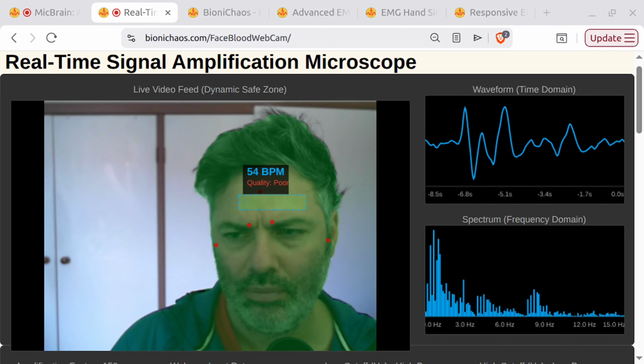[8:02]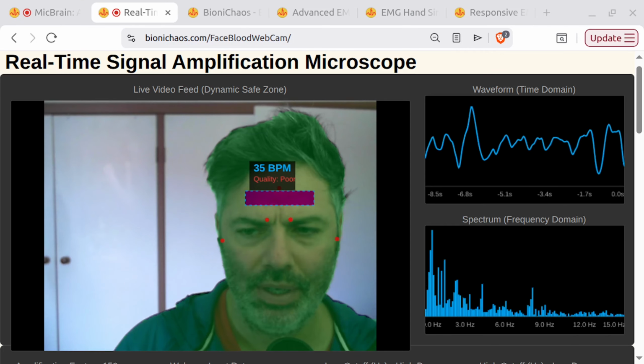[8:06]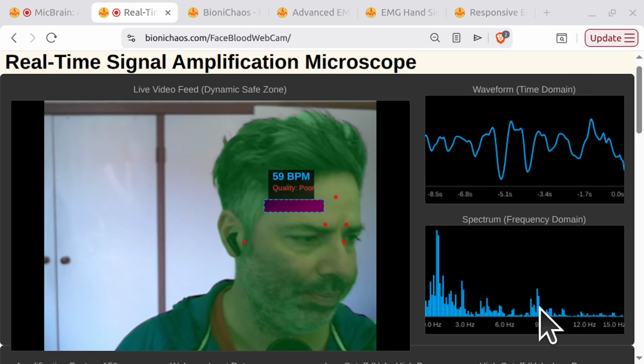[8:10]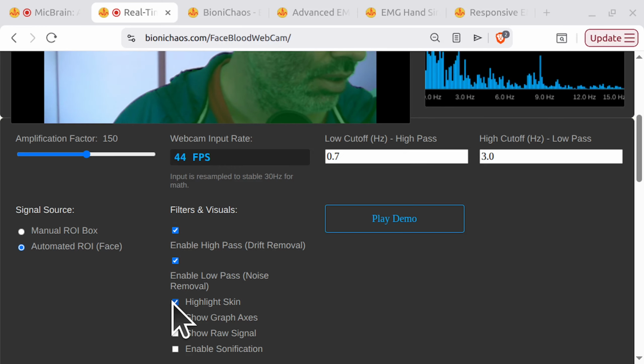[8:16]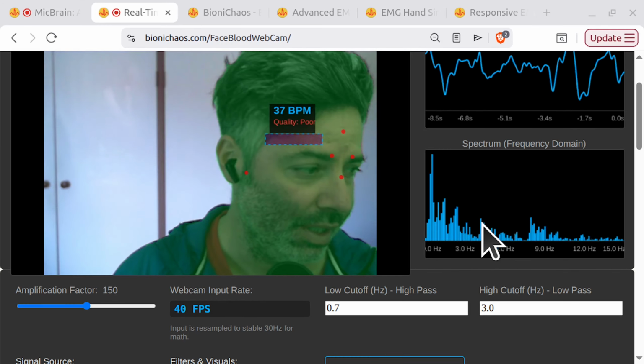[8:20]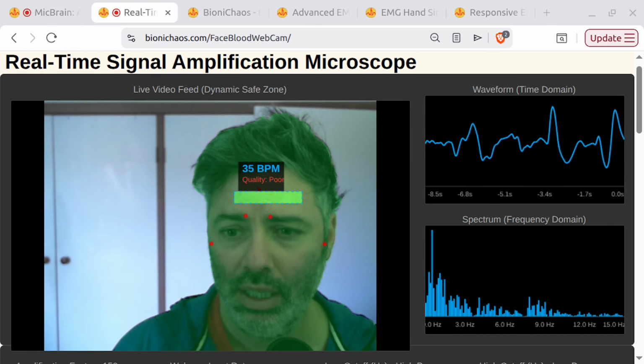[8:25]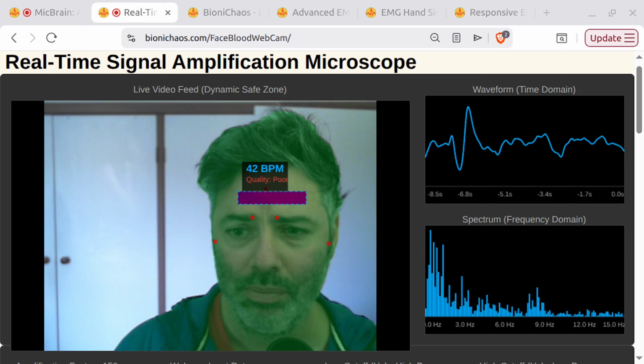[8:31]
Option C, to eliminate high frequency electronic jitter and sensor noise. So no, that's what the low pass does. It's removing everything above 3 hertz, which we don't really need. So C is not correct. Option D, to increase the frame rate of the video feed. No. So it must be B.
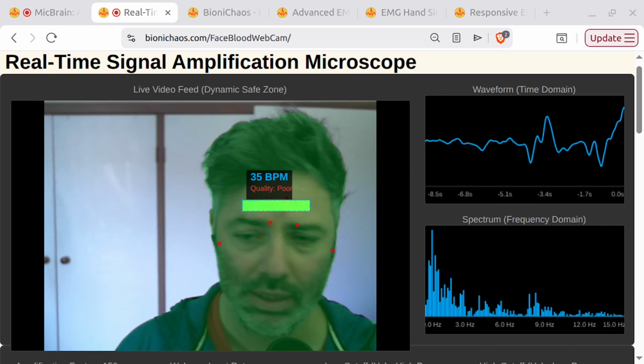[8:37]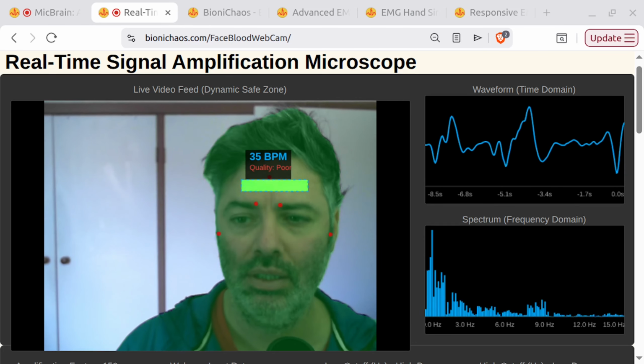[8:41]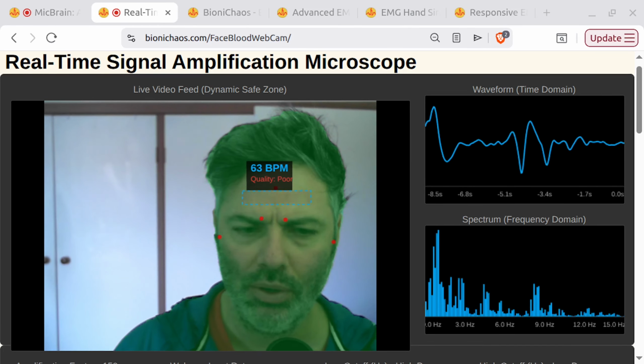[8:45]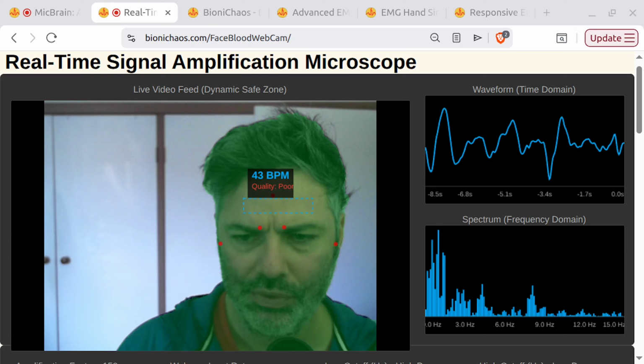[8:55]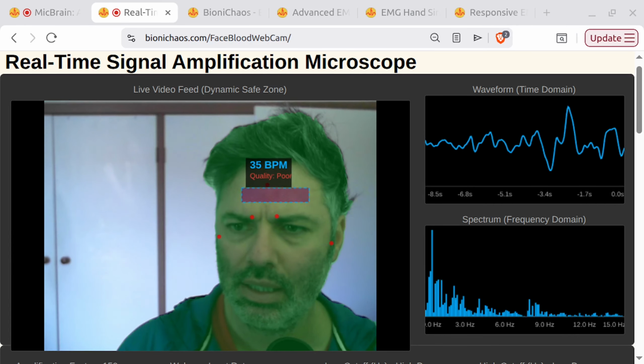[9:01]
So the high pass filter in this application is used to remove slow drifts caused by shadow movements, so small movements, or camera auto exposure, so something in the light. High pass filters block low frequency drift while allowing the faster moving pulse signal to pass through. So that's the answer.